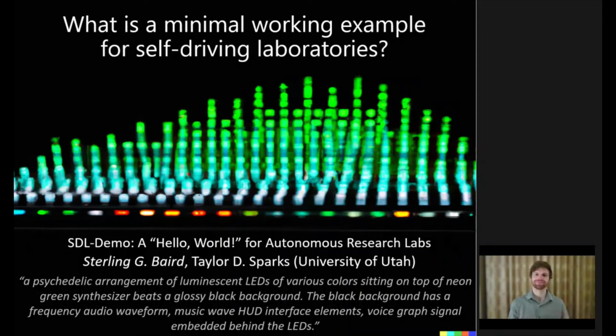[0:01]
Earlier today, I gave this presentation at the Acceleration Consortium's Accelerate conference. Had a wonderful time there. Very grateful for the privilege to have been invited to come and speak here in Toronto at the University of Toronto, and meeting some phenomenal people here. And I figured I'd like to record this presentation and make it available, and if I didn't do it now, it probably wouldn't happen. So here we are.
I'm presenting on a minimal working example for self-driving laboratories. This is what we call the SDL Demo, a hello world for autonomous research labs. So picture all the automation and the AI, the different components you get in a Tesla that allows a Tesla to be self-driving, make decisions in this feedback loop, and bring those aspects, those principles, into a chemistry lab where
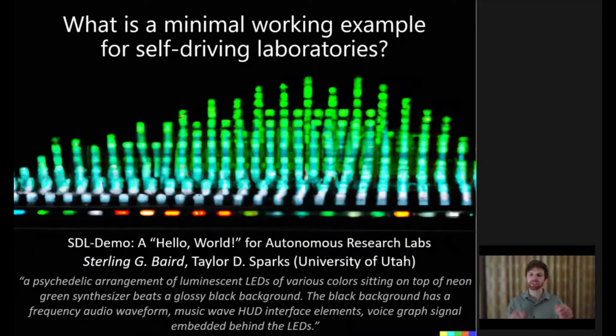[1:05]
people might normally be mixing things by hand and running these experiments manually and choosing deliberately every single experiment that they'll run next, maybe in a grid fashion or a design of experiments fashion, and transitioning that over to something where robots can handle the tasks involved, some of the more menial tasks, and where much of the decision making on the nitty gritty stuff of, okay, what exactly is the next experiment I should run to get the most information? That can also be relegated to an AI and free up more time for the researcher to do these higher level tasks like data analysis and designing the experiments, the search bounds, the different variables that will be looked at. And so what we're going over here is this minimal working example for it.
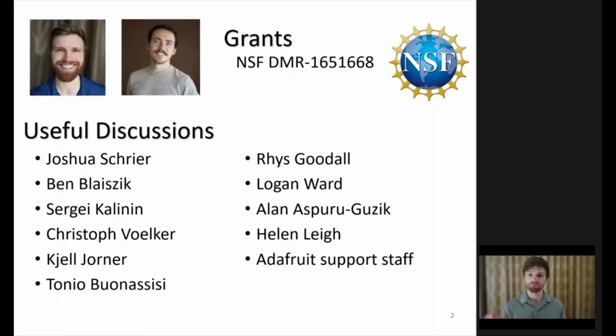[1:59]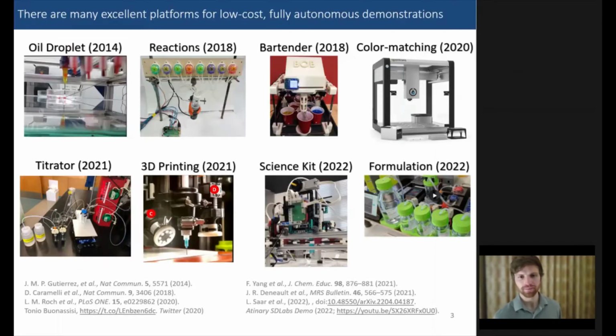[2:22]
So there are many excellent low-cost platforms for fully autonomous demos, dating back to as early as 2014, maybe some before that, and with many recent examples even this year. Now, these examples range from oil droplet experiments using a 3D printer, looking at how oil droplets coalesce, to chemical reactions, color matching and mixing, as well as pH sensing and optimizing a 3D print, optimizing the parameters there.
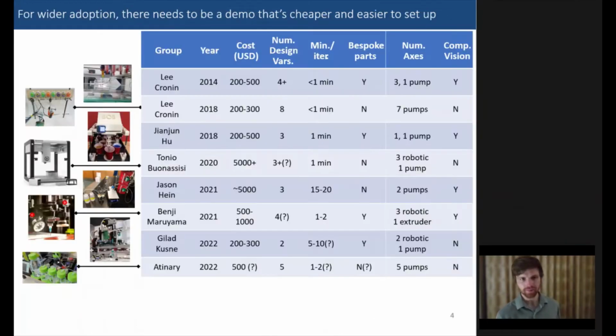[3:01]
For wider adoption, though, there needs to be a demo that's cheaper and easier to set up. If you take a look at the existing demos, you're looking at least a few $100s for most of these. Now, that might not be so bad in an educational setting. However, many of them also require custom parts. And so this increases the setup time required. It increases the expertise required to set up one of these demos from scratch.
And what we're proposing here is a platform that can cost less than $100. The iterations can be done very rapidly in 1 or 2 seconds. No custom parts are needed. And there are also no robotic axes, which can be seen as both a limitation and a strength. Strength in that it dramatically reduces the cost necessary to make this simple working example, but it also removes some of the more chemistry and material science heavy concepts and domain knowledge that can come from this, and so that's something we'll talk about towards the end of the talk as well.
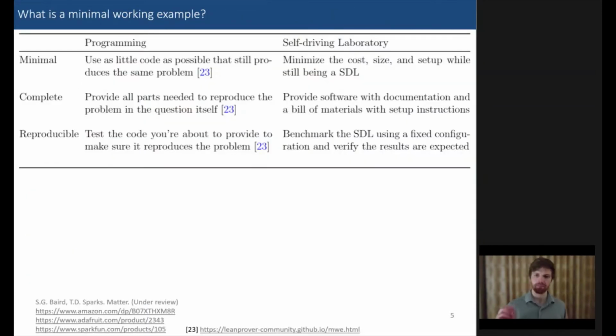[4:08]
So, what is a minimal working example? This is a term that comes from programming. If you've ever asked a question, had a problem with code, and you go to someone and you say, "Help me out," what do you provide them? Well, what the developer would really like to hear and to have is seeing a minimal working example. An example of the problem you're running into or something that you want to implement that uses as little code as possible while still producing the same problem, providing all parts needed to reproduce the problem in the question itself, and that you've tested this code you're about to provide to make sure it actually does reproduce the problem.
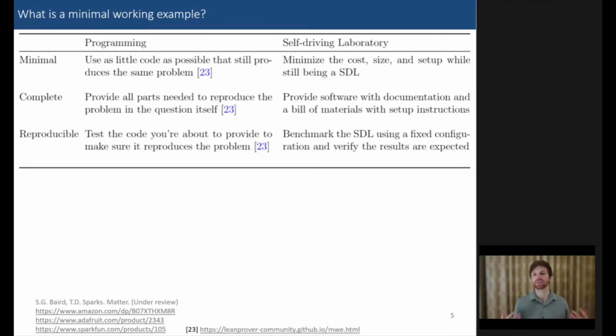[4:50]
And so this developer can come in, they can take a look at your code, they can plug it in on their own machine, test it out very quickly, reproduce the exact same error that you got, and very quickly drill down to the exact issue and help you out rapidly. And oftentimes, developers will ask for these minimal working examples because it dramatically reduces the burden on the developers to provide assistance with these. It allows them to do a lot more with their time in supporting the communities that they serve.
Now, let's talk a little bit about what that might look like for a self-driving laboratory. And we propose that minimal means minimizing the cost, size, and setup while still being a self-driving laboratory. And that complete means you've provided software with documentation and a bill of materials with setup instructions. And for reproducible, meaning that you can benchmark this self-driving laboratory using a fixed configuration and verify that the results are expected. So you can run this, have someone else run this, and you'll get approximately the same results.
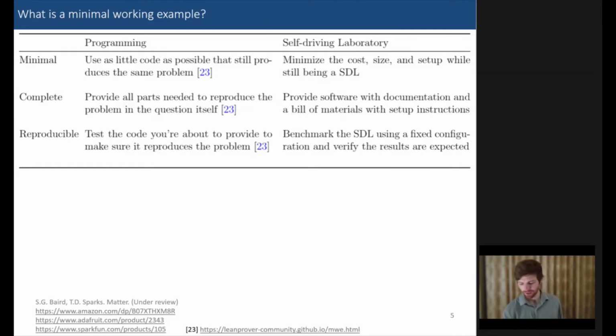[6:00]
And when we take a look at robotic arms, low-cost robotic arms, usually these start out at least $100 worth of equipment, but you get a pretty high cost in terms of how long these take to set up. You could be looking at 20 or more hours to get one of these simple robotic arms working and functioning as you intended, or you can pay more, you know, 500 to 1,000 for some turnkey solutions, some things that work a little bit better out of the box, but you naturally have a higher price tag associated with those.
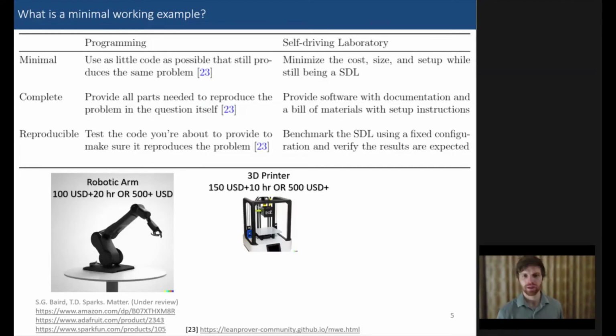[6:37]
Very similar story with 3D printers. The cost over the last decade has come down dramatically, making them a lot more accessible, a lot more open. The much lower cost printers still have a fair amount of setup time involved, as well as troubleshooting on the back end, leveling printer beds and installing new hardware, different troubleshooting. And similarly, you can get pre-built solutions and higher cost solutions that reduce some of that troubleshooting burden later on.
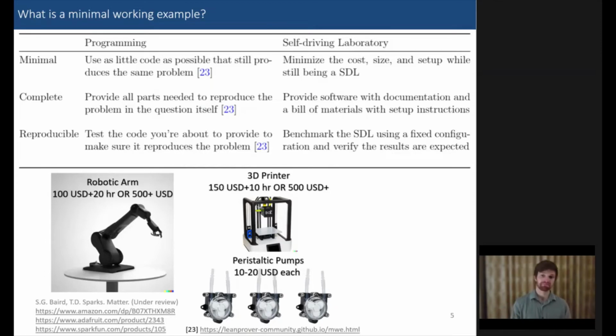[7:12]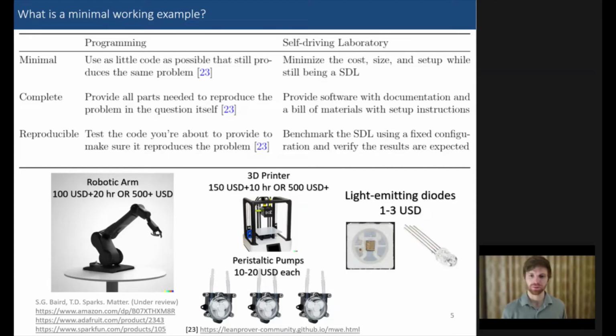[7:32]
Then we have peristaltic pumps. There were many of these used in the examples that I showed earlier, and these peristaltic pumps really start to come closer to the cost point that we'd be looking at and needing for a demo like this. But we can actually go even cheaper as we move to signal and source using a light emitting diode, or an LED, and using that in place of a material or matter. After all, light is a lot easier to move than matter.
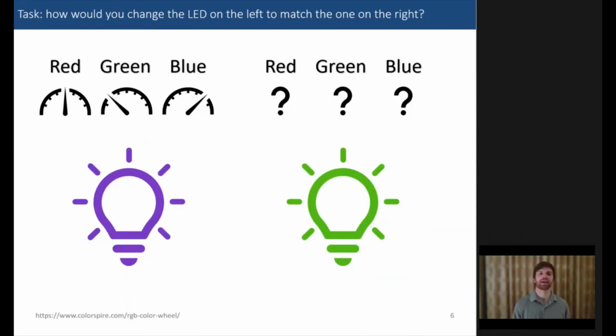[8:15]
And while it doesn't have that chemistry and material science aspect, I'll show how we can retain many of the key aspects of a self-driving laboratory in the chemical and physical sciences in a way that can still teach important principles while just dramatically reducing that overall cost and some of the difficulty in setting these up. So let's delve a little bit into the task at hand.
So you've got these two LEDs, these red, green, blue, or RGB LEDs. And on the left, you have this sort of purplish one, and on the right, you have this kind of pukish green one. And if you wanted to change the colors on the left, the individual red, green, blue values, to match the color that our eyes see, at least on the right, what would you do? If you had these knobs in front of you, you might just start turning them, and once you start getting something that looks a little bit green, you'll say, oh, okay, let me try to fine tune there. It's a very manual process, not necessarily reproducible,
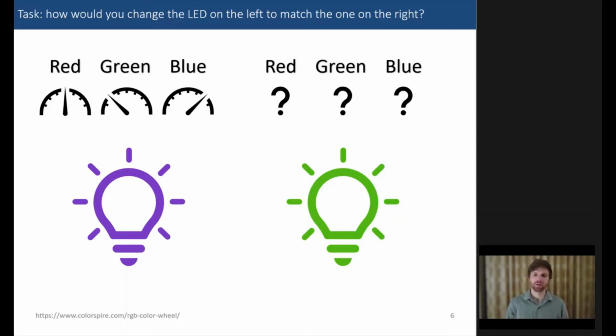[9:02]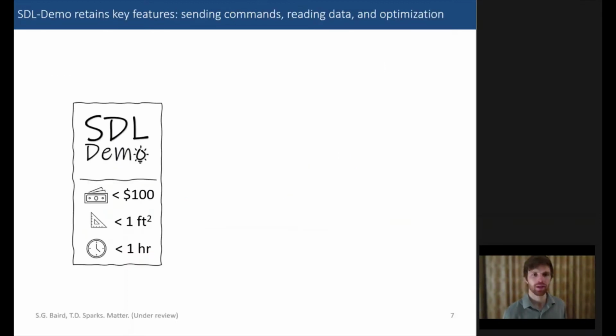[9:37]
and you might get something that's only kind of close to what you see on the right, which opens up the idea and the opportunity to use different optimization algorithms to very efficiently change your inputs, measure the outputs, and converge on the target solution that you were looking for, whether that's maximizing something or minimizing, in this case, minimizing the difference between what you're currently observing and what you want to observe. So this is the task, just this sort of simple light matching or color matching using light. And I mentioned before that the SDL demo retains key features. Some of these are sending commands, reading data, and the ability to optimize or close the loop in an optimization loop.
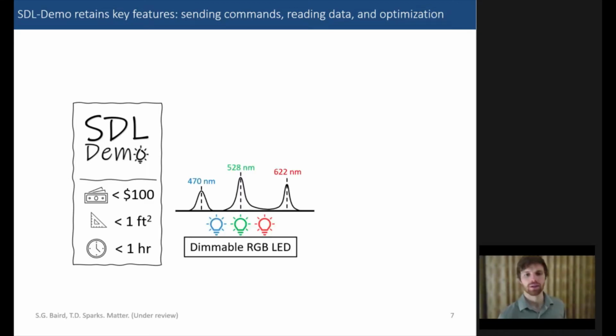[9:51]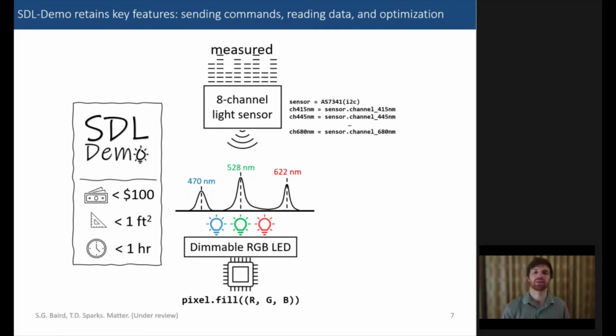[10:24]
So here we have this dimmable RGB LED. So three distinct LEDs, each with their own characteristic spectra and wavelengths. And so, blue is sitting around 470 nanometers, green at 528, red at 622 nanometers. And you can control the individual brightnesses of each of these LEDs using a microcontroller and sense the spectrum, or kind of the mixture of that light, using a low-cost sensor with 8 discrete wavelengths that it measures.
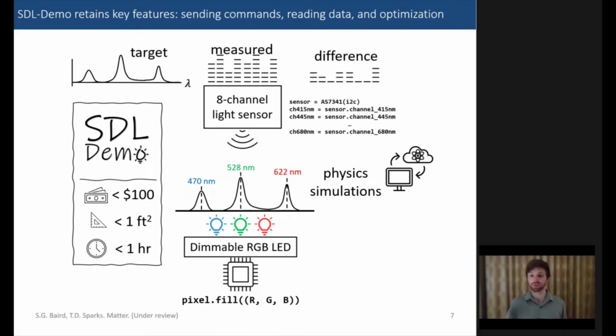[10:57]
You define some target spectrum, which could be completely arbitrary, and is really arbitrary for this demo. But you pick one, and you measure the difference between what you just measured and what your target is. And you can use that in a loop, possibly with some physics simulations integrated there, which we'll go into more detail a little bit later. And ask yourself the question, what method can I use to reach the target? And this is where some of those optimization algorithms come in.
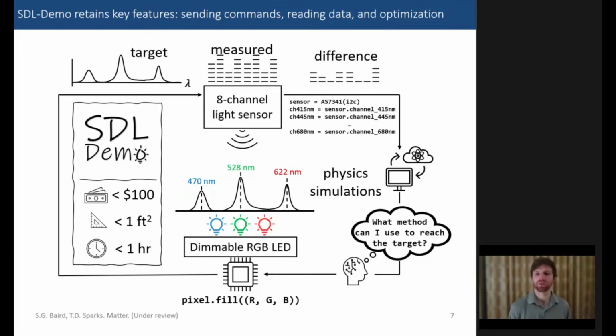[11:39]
You could use something very simple, like making a grid of points and testing them out. You could do something a little bit more efficient, at least generally, where you randomly search for points in this space. Or you can use something even more advanced and typically more efficient, but a little bit more computationally costly, algorithms like genetic algorithms or Bayesian optimization, which is one that I'm very partial to. So then you close the loop, and you run this in cycles for however many iterations, 10, 50, 100 iterations, looking at how you converge on the target value, reducing that difference.
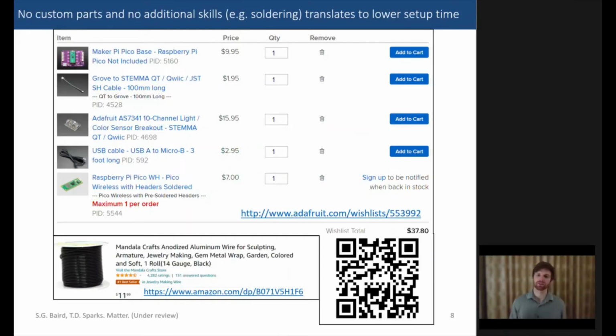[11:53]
So let's go a little bit into the parts here. So this was designed, and there are many other designs this could take on. There were no custom parts and no additional skills, such as soldering, involved with the setup, which translates to a low setup time, setup cost. And so you've got these two parts, one from Adafruit, totaling to about $40 US, and then some sculpting wire to help you position the sensor a certain distance away from and perpendicular to the LED. Just something you get from a hobby shop or Amazon, and maybe you have something else that would work just fine in its place.
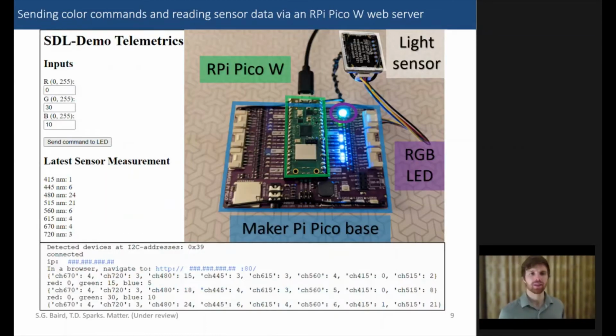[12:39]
So here we have a working demo where we're able to send color commands and read the sensor data via, and don't get too scared by this, a web server hosted on the Raspberry Pi Pico. And while it can take a little bit of knowledge and getting used to if you're not familiar with web servers, I certainly wasn't before this project. Once it's ready, it's fairly easy to adapt into different applications.
And this is one of the nuances of using a microcontroller instead of a single board computer that could run the full version of Python on a Linux operating system, or Ubuntu Linux, versus a microcontroller that in this case only has 2 megabytes of RAM to store. So you can't use a full programming language. You need something that's called MicroPython to be able to make this work with the Pico wireless.
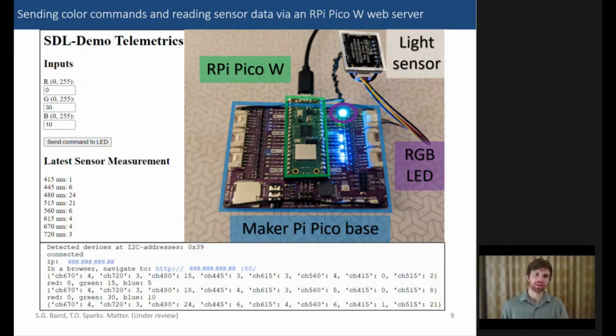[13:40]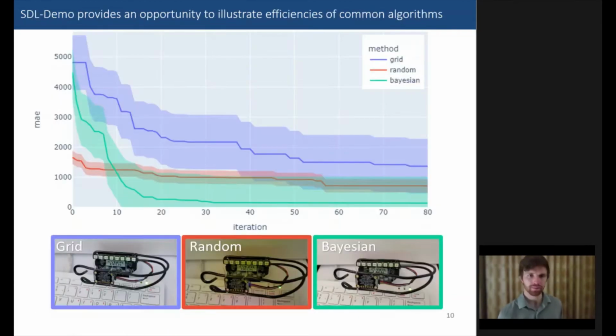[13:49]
And on the left here, you can see how you can enter in values for the red, green, and blue, send the command, and then measure the latest sensor data here. And next, we have that the SDL demo provides an opportunity to illustrate efficiencies of common algorithms. So this points out one of the ways it can be a teaching tool, while it may not be particularly interesting from an optimization benchmarking perspective.
So in the blue, we have a grid search method, in the red, a random search, and then in green, Bayesian optimization. And we see that, as one would expect, based on trying these algorithms on different problems, grid search is the least efficient, random search comes next, second place, and Bayesian optimization is very efficient, quickly overtakes the random search by the 10th iteration or so, and drops the error between your target spectrum and the spectra that you're measuring very quickly here.
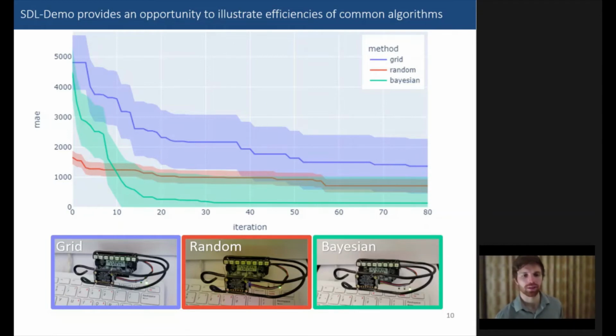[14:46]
And we can take a look at what each of these searches look like qualitatively. So with the grid search, you can see that it's starting from 0 power and then increasing the brightness for a fixed color and then moving on to a somewhat different color and it repeats that. Whereas with random search, you'll see that it's picking random intensities, random colors. As the name implies, you're getting just a random search, which can be fairly efficient and generally more efficient than grid search. And last, we have a Bayesian optimization algorithm,
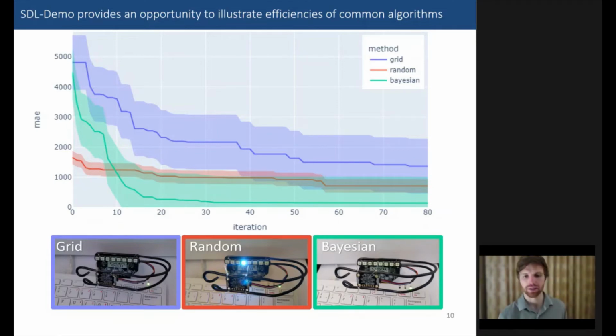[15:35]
which there's some great resources for understanding Bayesian optimization on Towards Data Science, and I encourage you to look at those if you're not familiar. What's happening here is that each trial is taking longer in between iterations, and that's because internally within the Bayesian optimizer, it's fitting a model and it's trying to compute based on that model where the next best place to search is. Essentially, what next experiment will give me the most information or help me to most quickly reach the true minimum error in this case. And so here we have the comparison of 3 optimization algorithms.
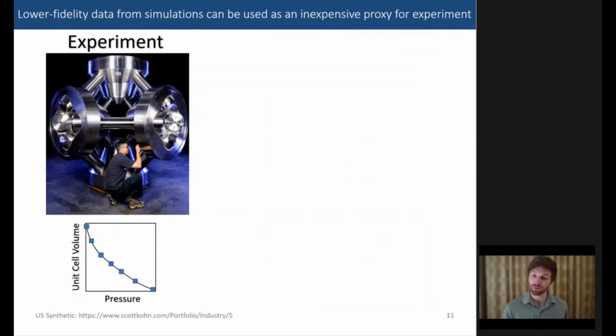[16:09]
And earlier I mentioned that this is compatible with running simulations, something that's very common in chemistry and material science. On the left here you see a diamond sintering anvil. There aren't very many of these in the world. They're very expensive. We're looking at on the order of tens of millions of dollars for one of these, and it can take a very long time to prepare samples and run these experiments. Very expensive process.
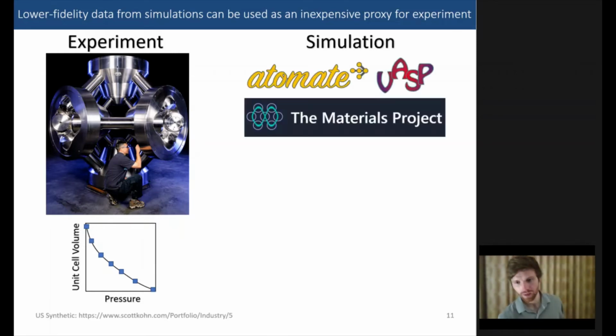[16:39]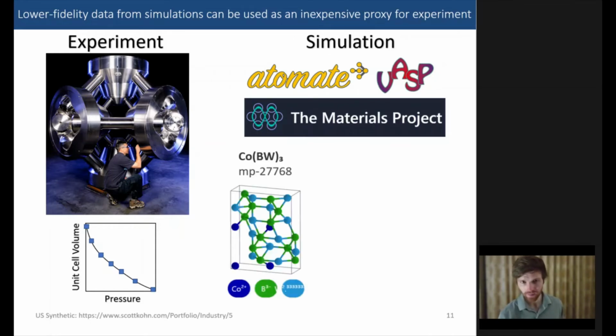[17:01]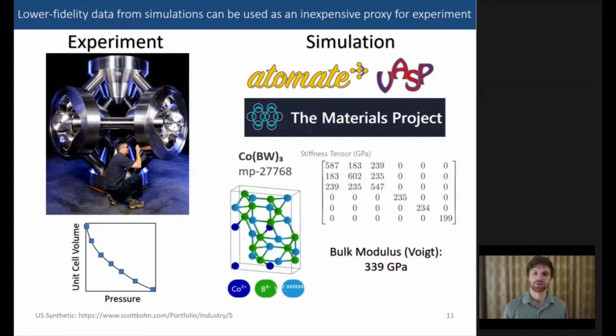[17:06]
And alternatively, we can run simulations that can get us similar data for the bulk modulus. And with this, you can use some common software packages like VASP and wrappers for it that give you pre-built workflows, like the ones that are used for the Materials Project. You have some input structure that you need to have or determine, and you can extract the bulk modulus from these simulated values of compressing the microstructure and looking at how that changes the volume.
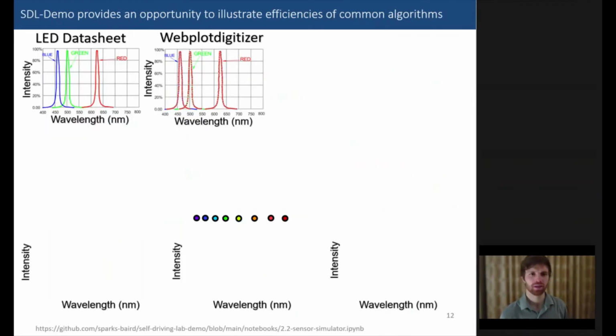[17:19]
So next we have an example of a simulation involving the SDL demo. Now this, on the left here, we have a snapshot from an LED data sheet, and you can see the blue, green, and red spectra for a particular LED, and we can use a tool like Webplot Digitizer, which we've liked using, to extract the individual data points from each of those curves.
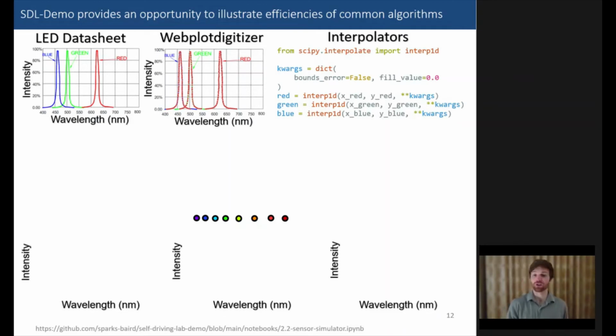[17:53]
From there, we interpolate. We have an interpolator for red, an interpolator for green, and an interpolator for blue, and later on we can sum different ratios of that interpolated curve, in this case just a linear interpolation, to arrive at a new simulated light mixture. Now this isn't just yet to the point where we have the same kind of data we receive from the sensor, but we're getting closer there.
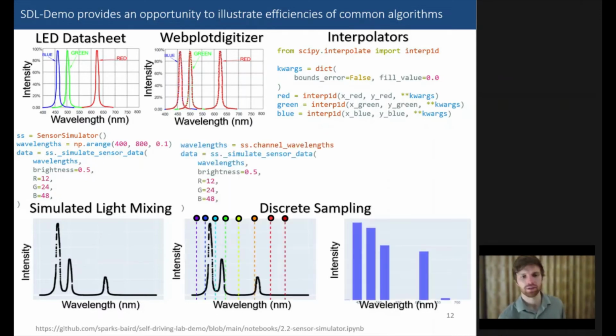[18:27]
So from here, we can take a look at just sampling this simulated spectrum at the same locations that the sensor would be measuring at. And you can see 2 visualizations of that, each of the colors being sampled there, as well as this bar chart, sort of a histogram of intensity versus wavelength there.
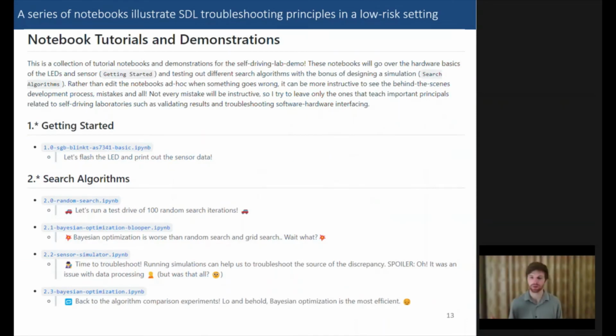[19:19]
And we created a class that allows you to very easily switch from experimental to simulation mode, and so that makes it a little bit easier to swap things out in your code. You can just switch an argument from true to false in order to switch between simulation and experiment for this. And we've prepared a series of notebooks that illustrate various self-driving laboratory troubleshooting principles in a very low-risk
setting here. So you can start out with just flashing the LED, reading some sensor data, then reading some sensor data while flashing the LED, then introducing a basic search algorithm, and moving on from there, implementing the simulator class and testing it, taking a look at the basic physics involved with those decisions, and finishing off with this comparison of the different search methods. And more notebooks to come. If you have any that you'd like to see, please let me know, and I'd be happy to see if it's something I can implement and get back to you on.
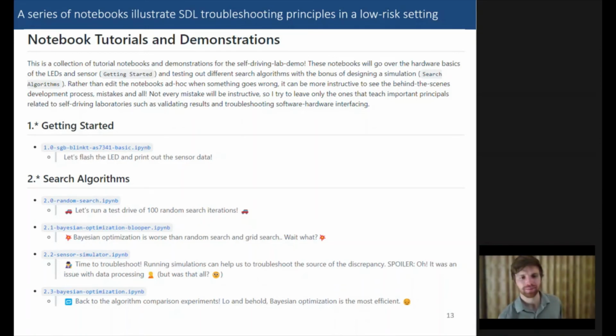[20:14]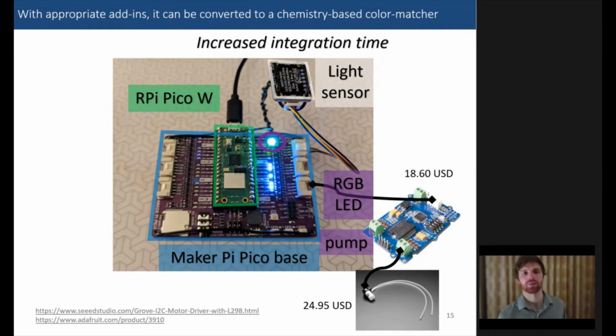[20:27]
So here, I'm going to talk about how this demo is both modular, which I described a little bit earlier, and extensible. So with the appropriate add-ins, you could convert this to a chemistry-based color matcher, similar to the ones that we saw at the very beginning, with a mixture of molecules to match a particular color. You can have some power hardware, a shield that allows you to control peristaltic pumps, connect those to your dyes or your sources of colors, and then use an increased integration time with the light sensor to be able to detect what the final color of your solution is.
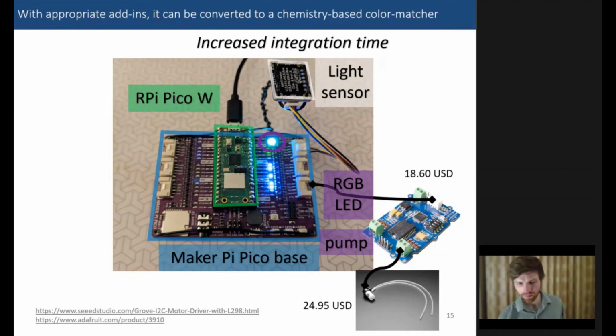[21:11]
You could also add a pH sensor here, a low-cost pH sensor using one of the nice Grove ports on the Maker Pi Pico base. And so this way, you simply need to plug in the appropriate cord to the different ports and use the corresponding packages or some of their demo code to read the data that you need.
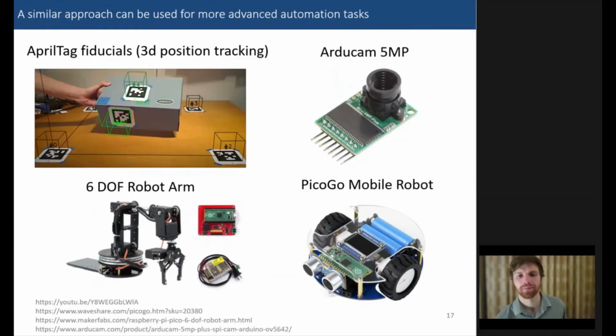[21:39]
And a similar approach can be used for more advanced automation tasks. You can picture something using computer vision with these 3D position trackers or April tag fiducial marks, or maybe even putting a low-cost robotic arm on top of a mobile robot and having that move around and pick some things up and demonstrating a basic chemistry or material science task at hand, maybe mixing some solids or liquids together and testing various properties there. And so you can use some of the same equipment here, but in an extended way using these different add-on modules. If you have other ideas, please let us know.
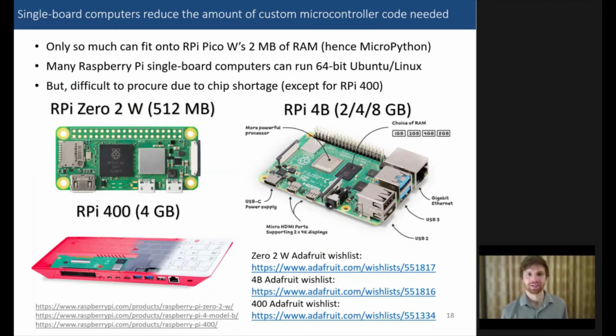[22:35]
Next, I want to talk a little bit more about the design decision for the microcontroller. Now, single board computers reduce the amount of custom microcontroller code that you need. Like I said, only so much can fit onto this 2 megabytes of RAM on the Pico W, which is actually kind of a lot as far as microcontrollers go. And so you need something like MicroPython. Whereas many Raspberry Pi single board computers can run 64-bit Ubuntu, a Linux operating system.
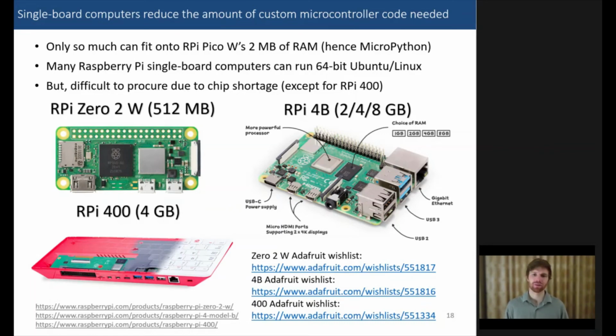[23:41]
However, it's been very difficult to procure some of these single board computers due to the chip shortage. So we have the Raspberry Pi Zero 2 W, 512 megabytes, a very popular one for Internet of Things wireless applications, nearly impossible to get right now. You have the Raspberry Pi 4B, which comes in different RAM sizes, up to 8 gigabytes, which is pretty nice. However, also difficult to get. And then you have a more expensive module, something that starts around $100 for a kit, the Raspberry Pi 400, which has essentially a Raspberry Pi 4B 4 gigabyte module embedded into it, which you're more likely to find available, but it pushes us past that price point of less than $100 that we're aiming for.
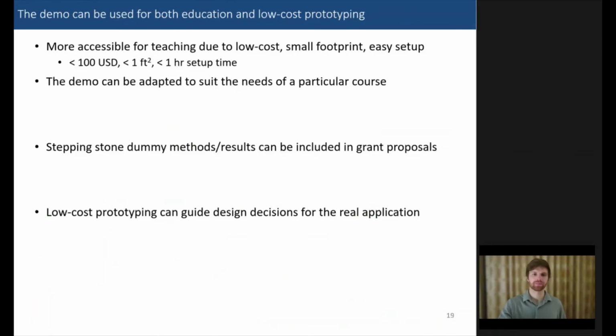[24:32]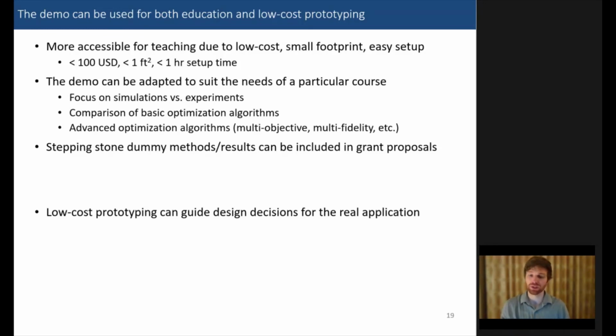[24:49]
And I made designs for each of these and slowly progressed from some of the more expensive designs, the ones using single board computers, and eventually nailed it down to a Pico W solution based on just the availability of the hardware. And this demo can be used for both education and low-cost prototyping. It's more accessible for teaching due to its low cost, small footprint, and easy setup. The demo can also be adapted to suit the needs of a particular course. So you could have a focus on simulations versus experiment and the presence of noise and bias and uncertainty measures.
You could compare basic optimization algorithms like I showed before, and you could even get into some more advanced topics like multi-objective optimization, multi-fidelity optimization, where you're incorporating multiple qualities of your data, like experiment being more of the ground truth that you're looking for, and then simulations being lower fidelity, but much less expensive to run, and so forth.
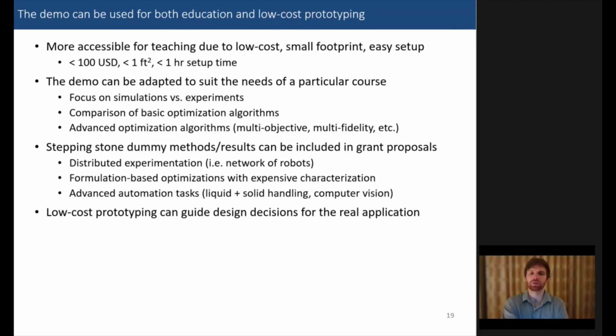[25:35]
And this can also be, I mentioned the prototyping, this can be a stepping stone for showing some dummy methods or dummy results for you to include in a grant proposal. And you could look at some different topics like distributed experimentation, where you put a network of robots together, performing experiments with some central brain, sending commands out. You can have formulation-based optimizations with some cheap characterization hardware that after you get the grant proposal, you replace with much more expensive real-world task characterization equipment.
And you could look at advanced automation tasks like doing liquid and solid handling and computer vision, using some of those extensions that I mentioned earlier, and kind of troubleshoot and prepare the way for doing that for a real critical materials task for improving society.
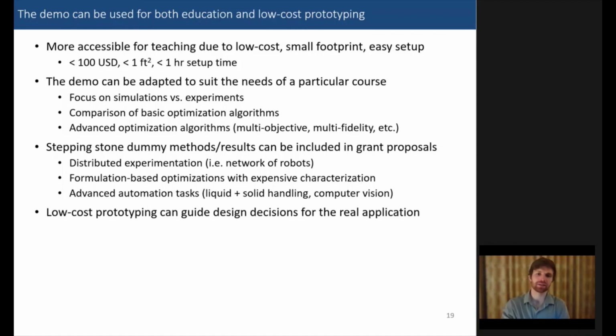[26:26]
And next, this low-cost prototyping can help you guide design decisions for the real application. And that's especially applicable for first-time grant proposals. If you've never set up a self-driving laboratory before, getting this hands-on experience can really help you to flesh out the idea, figure out what will or might not work.
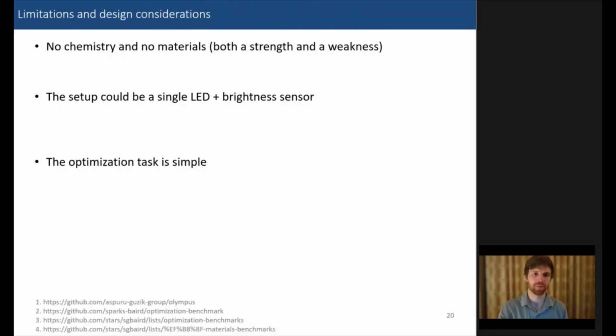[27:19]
And that modularity really helps with troubleshooting complex systems where you say, okay, can I turn on the LED? Can I read data from the sensor? Because as these systems get more and more complex, they also become exponentially harder, or at least combinatorically harder to troubleshoot, because the number of ways that the system could fail is increasing dramatically the more components there are. So that modularity really helps to reduce the time needed to troubleshoot some of these systems.
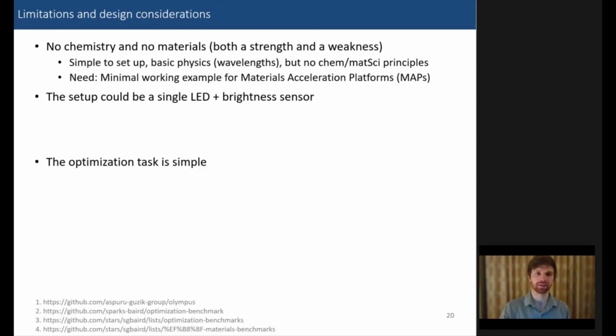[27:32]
And finally, a few comments on the limitations of this and the design considerations that went into this. So like I said, there's no chemistry and there's no material science, which is both a strength and a weakness. It's simple to set up. There's some basic physics involved, but no chemistry or materials science principles. So there's still a need for a minimal working example for materials acceleration platforms, which is essentially a self-driving laboratory applied to the discovery of new materials or getting breakthroughs in our understanding of these materials and so forth.
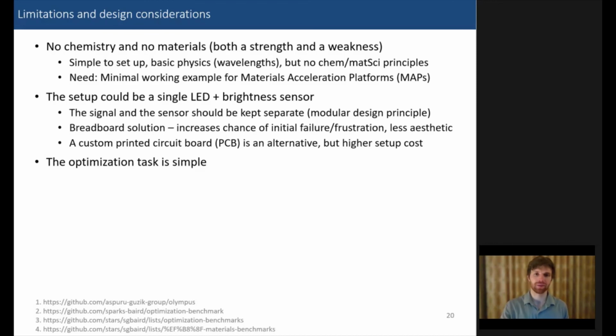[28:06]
And there's also the argument that this setup could be a single LED and a single brightness sensor. However, there weren't really any existing solutions that just had a board with a single LED. We could use a breadboard, but that increases the chance of initial failure and frustration, and is less aesthetic. Now we could use a custom printed circuit board, but that is a higher setup cost, harder for people to repeat and source, and there's a cost associated with these custom prototypes.
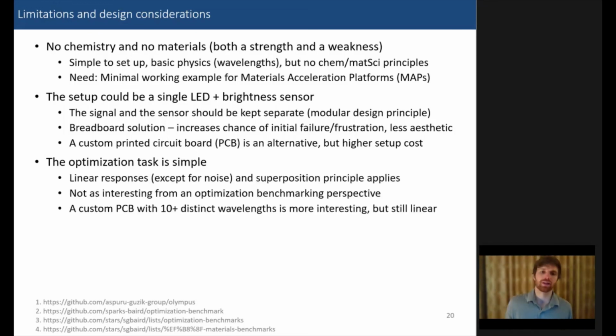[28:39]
And last, the optimization task is quite simple. They're linear responses except for noise, and the superposition principle applies where you can essentially just stack the spectra on top of each other and you get the final mixture of light. Since we're using very basic setups here, not really anything where light is canceling each other out, at least in any measurable way or noticeable way here. So it's not really as interesting from an optimization benchmarking perspective.
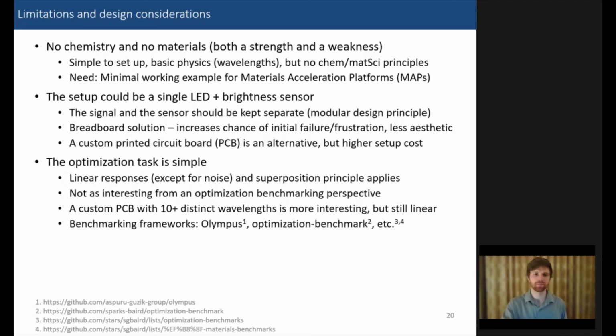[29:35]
You could make a custom printed circuit board with 10 or more distinct wavelengths, carefully selected. That would be more interesting, but it's still a linear problem. And so that's just one of the drawbacks of this demo, but it was also the intention and the purpose to keep this as simple and as minimal as possible while still retaining the key features that we wanted.
And for alternative benchmarking frameworks, you could look into something like Olympus by the Aspuru-Guzik group, very nice package there that Riley Hickman is working on. Some of the work we're doing with the optimization benchmark, this customizable benchmark where you request a certain number of numerical parameters and a certain number of categorical parameters, and you have this complex task under the hood that starts to look more like a materials optimization problem, one where you're optimizing a formulation of things, and so it's subject to constraints as well, constraints that you specify. And there are other examples of optimization benchmarks and materials benchmarks that you can check out at the links below.
So what have we gone over? We've taken a look at the SDL Demo, this Hello World style project for self-driving or autonomous research laboratories. We've seen that we can use this to do some basic comparisons of optimization algorithms. We've looked at how it's modular and extensible. We've taken a look at even running some simulations with it, and noted how this can be used for educational settings as well as low-cost prototyping settings.